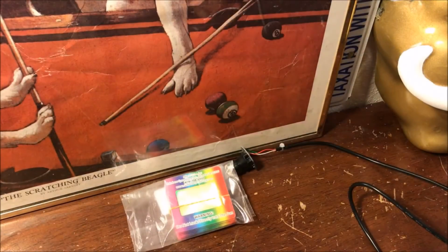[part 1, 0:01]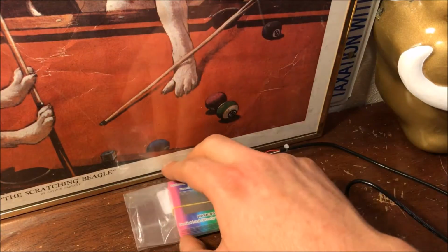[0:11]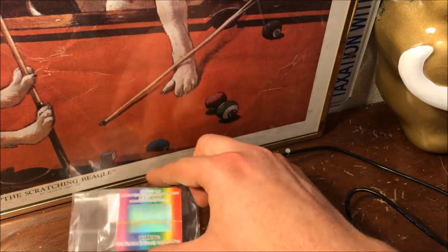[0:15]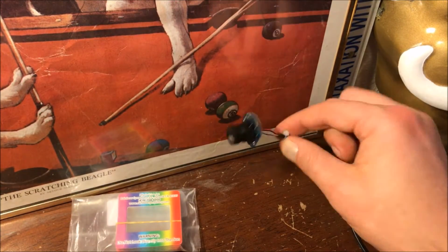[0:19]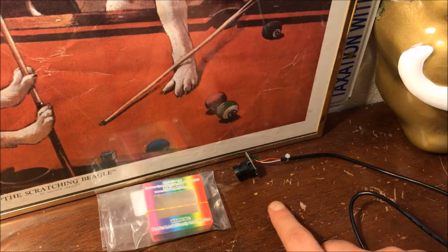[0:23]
Hey guys, today's going to be the second part of the DIY $20 spectrometer series. So in the first part, we discussed the main components of the spectrometer, the diffraction grating and the webcam camera. If you still haven't seen that, definitely go check it out, and it'll give you the information on how we got to this point.
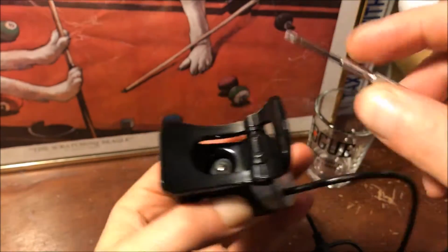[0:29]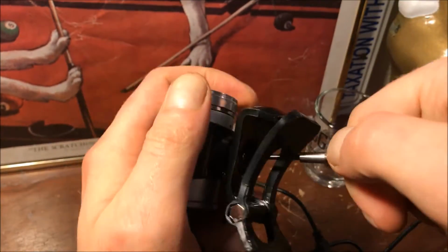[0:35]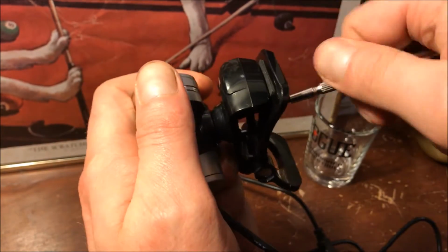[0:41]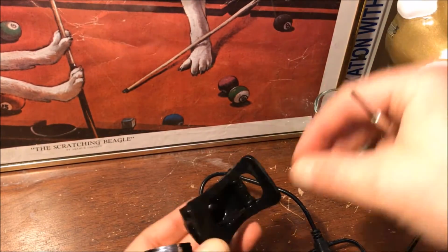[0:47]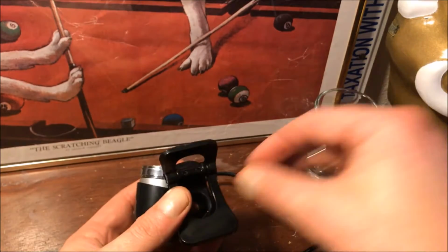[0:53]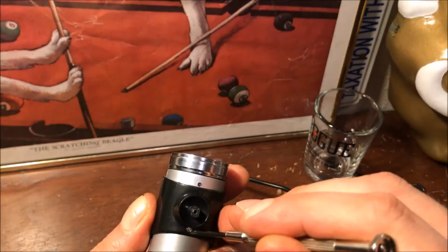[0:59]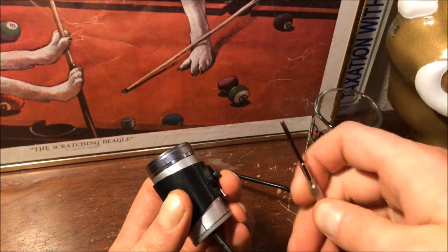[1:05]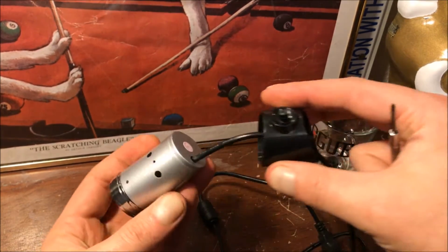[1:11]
Alright, so it looks like it has a screw attaching the clip on here, so I'm just going to try to take that out. It's probably going straight into plastic, I'm guessing. Oops. Okay, so there's a bit that kind of gives it that swivel effect. Okay, so we have another screw here holding this housing. So that just comes off.
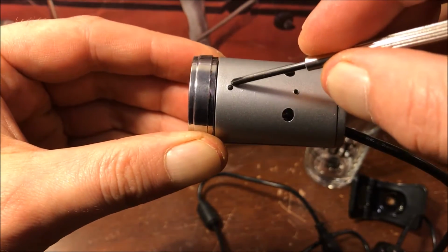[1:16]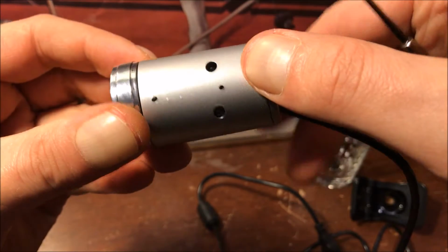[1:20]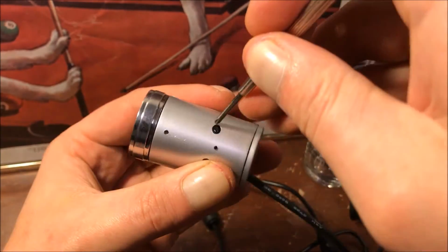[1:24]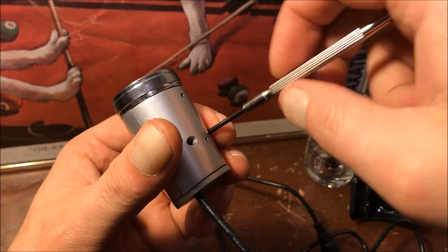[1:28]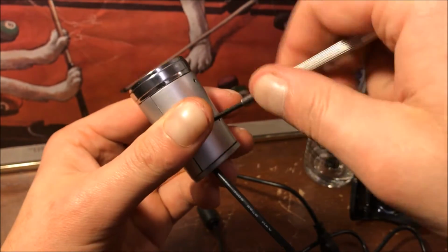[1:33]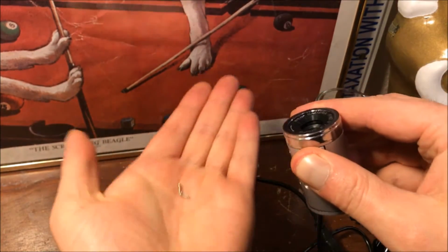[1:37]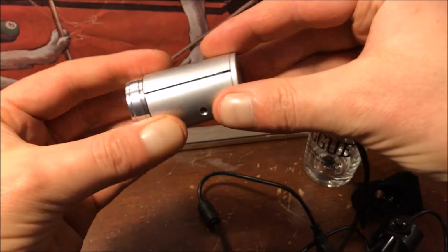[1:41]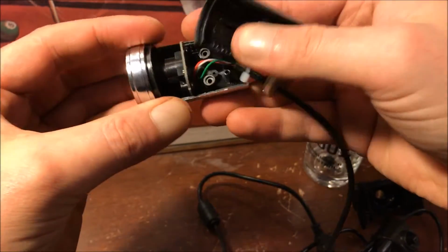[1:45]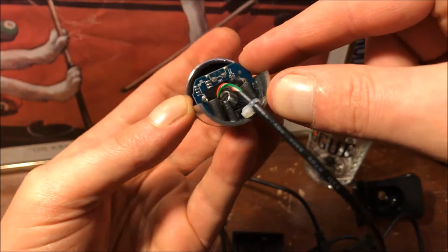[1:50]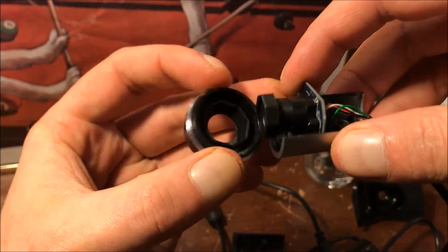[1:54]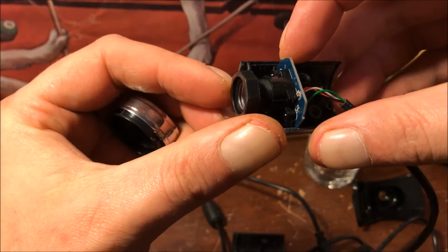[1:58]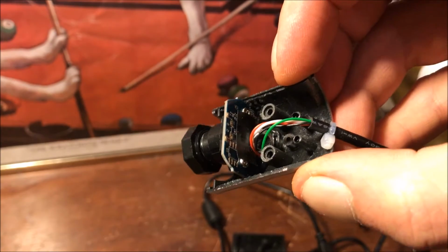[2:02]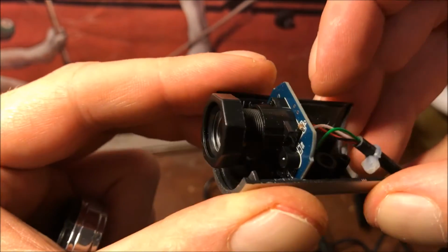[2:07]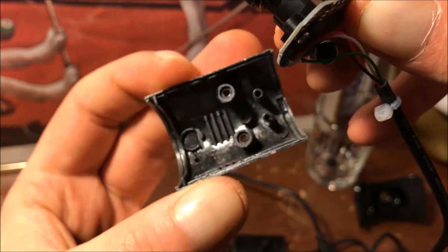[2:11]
Then that's probably the hole for the microphone. And then, okay, so there's screws in each of these holes as well. Just comes right apart. See what we got here. So there's the control board, and here's the lens. So I think it's just sitting in there. Oh, yep, comes right out.
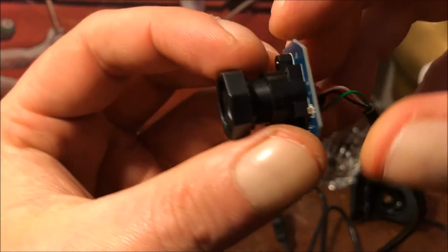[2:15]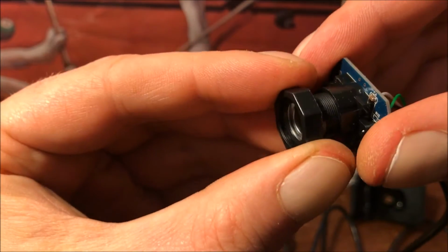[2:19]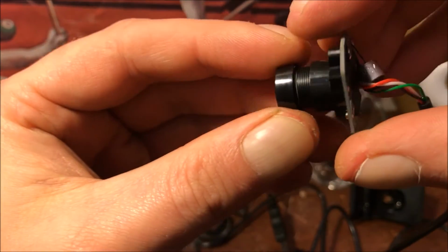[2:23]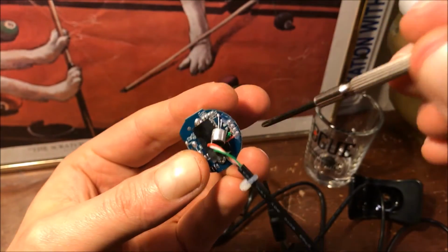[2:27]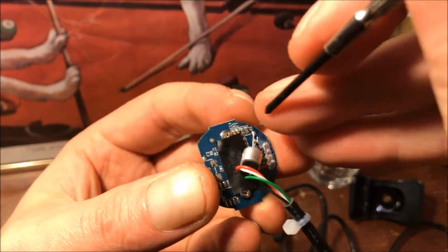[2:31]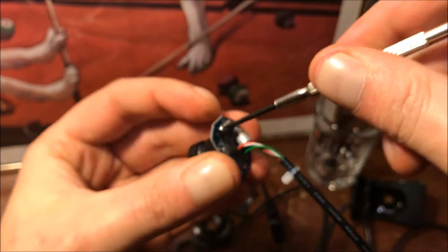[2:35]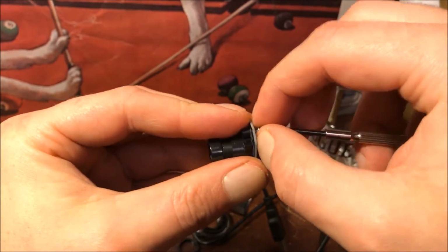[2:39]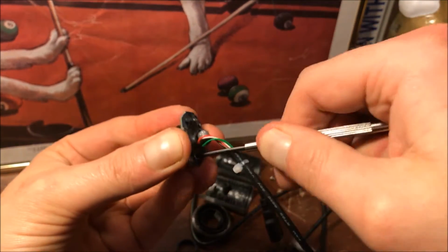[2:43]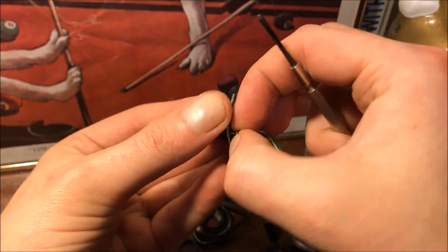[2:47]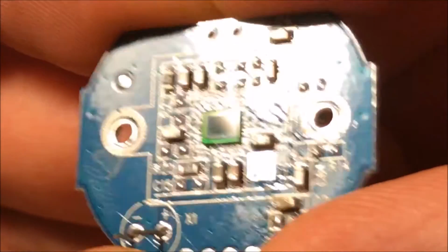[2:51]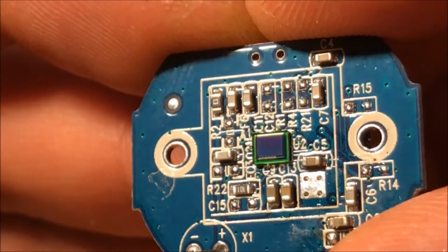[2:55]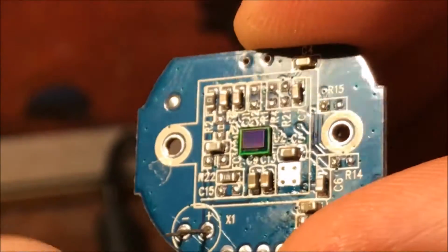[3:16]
Take this bit off. And now if we want to remove the lens, I think we need to unscrew it from this side. So that image sensor there has many small components that we call pixels, each of them independently responding to light. And this one's 640 by 480. Basically the way our spectrometer is going to work is that we're going to use the diffraction grating to split up white light, and it's just going to separate it onto the image sensor.
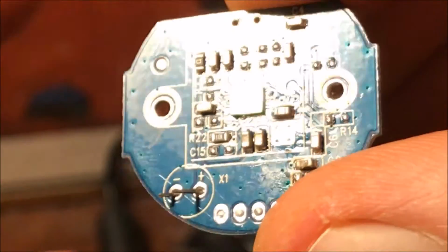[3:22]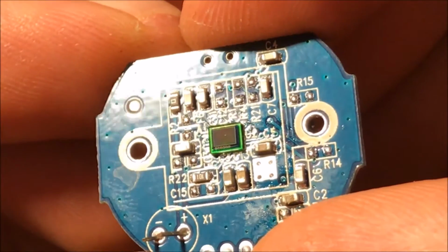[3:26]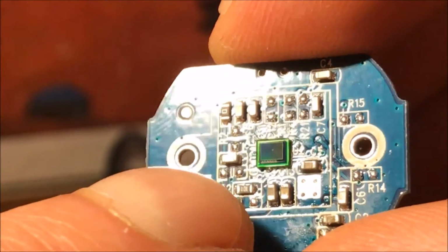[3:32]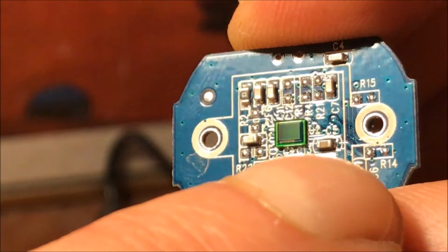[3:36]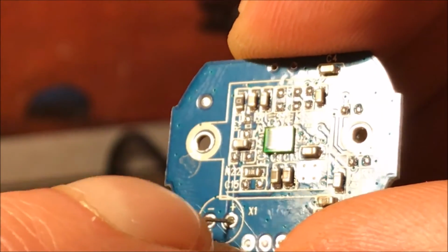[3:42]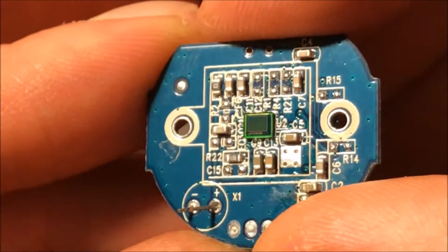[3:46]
So the image sensor does not need to know what wavelength it's getting. It could even be a black and white one. What matters is that on one side, on the left, let's say, it'll pick up blue and UV, and on the right side, it'll pick up red and IR, green somewhere in between. And so it'll just count the intensity at each of those pixels, and we can reconstruct a spectrum from that.
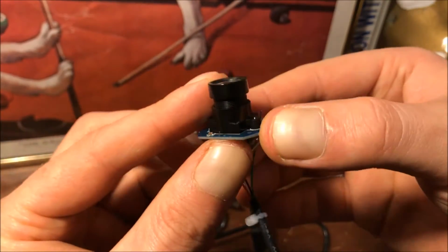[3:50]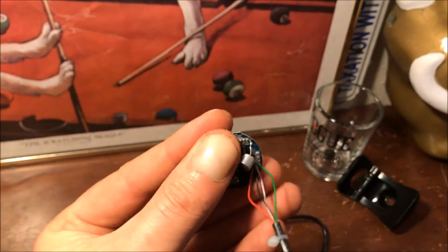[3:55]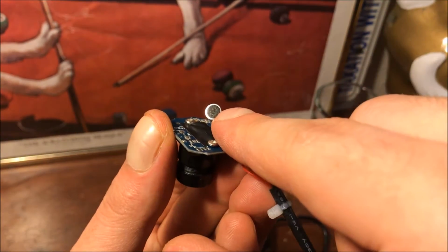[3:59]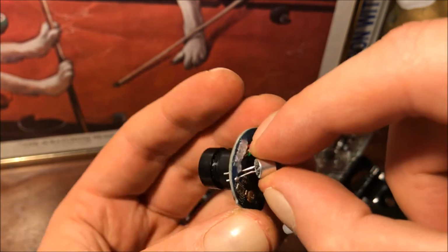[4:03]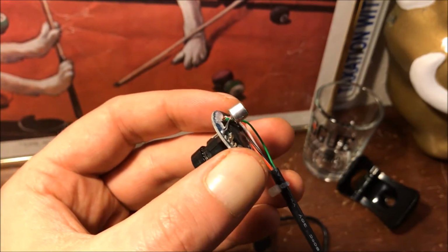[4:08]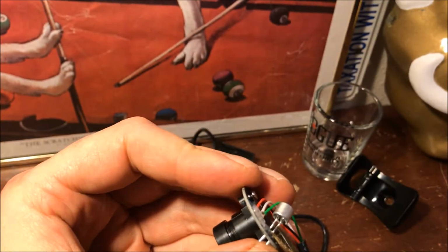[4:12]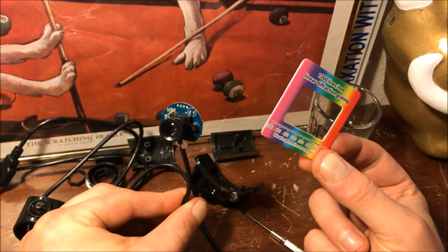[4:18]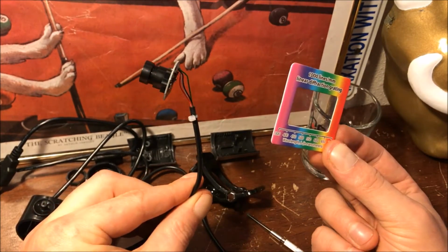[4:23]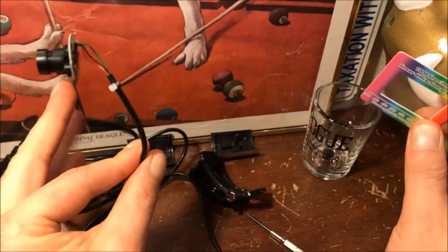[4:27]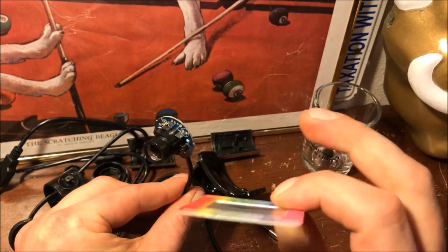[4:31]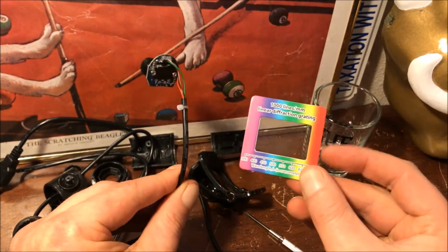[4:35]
I put back the lens, screwed it back onto the board. Now we have the microphone still left on here. You can leave it if you want to use this for some other applications, but for me it's going to be dedicated to the spectrometer. So I'm just going to clip that off. Alright, so basically with these two components, we have everything we need to make a spectrometer. The only thing remaining is some way to isolate all of the stray light that is present, so that we can just focus the light into the camera from just the source that we want to analyze.
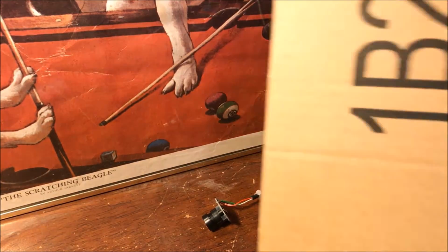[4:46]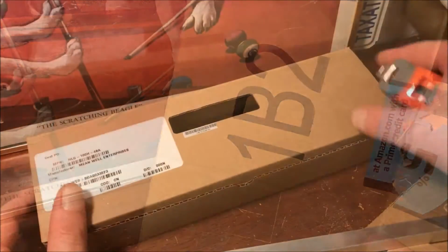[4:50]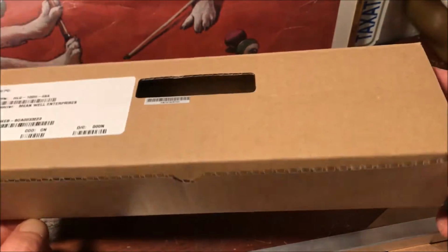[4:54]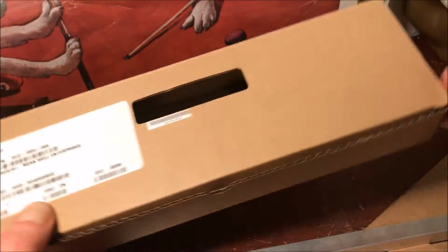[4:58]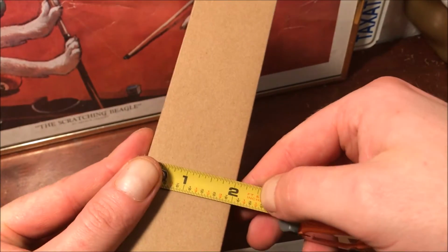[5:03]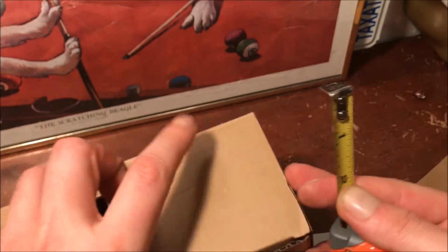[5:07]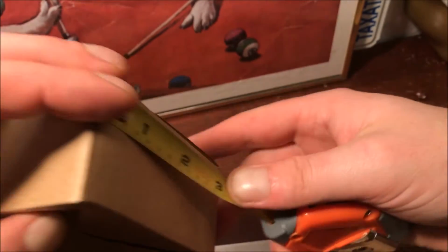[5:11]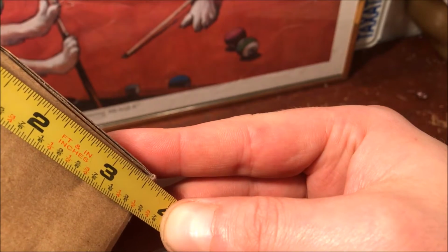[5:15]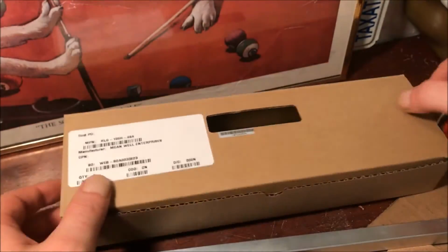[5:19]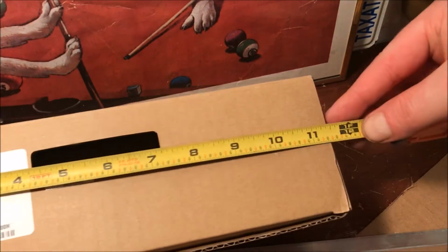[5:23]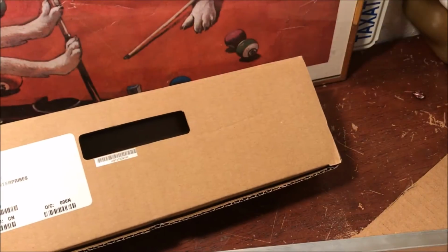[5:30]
You can make it out of a various number of materials, out of wood, out of a foam board, but I'm going to go ahead and use just some cardboard. I'm actually going to try to use this box that the Meanwell driver for the LED boards I'm running right now came in. It is just about 2 inches, so I'll have to trim the diffraction grating. So 2 inches high, 3.5 depth, and around 11 3/8 for length.
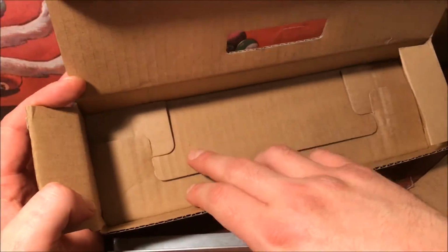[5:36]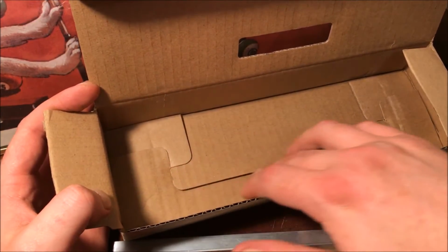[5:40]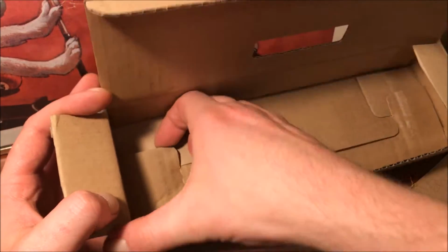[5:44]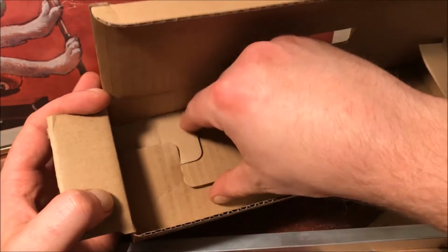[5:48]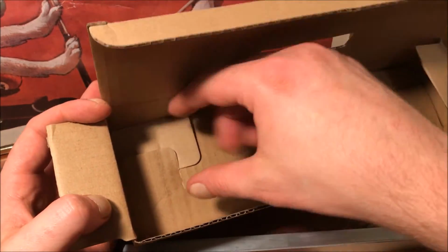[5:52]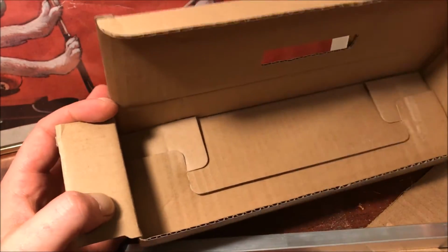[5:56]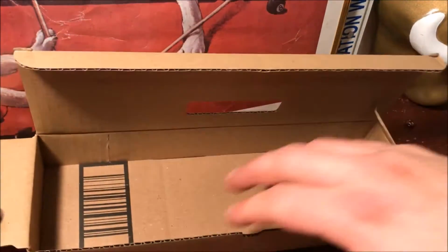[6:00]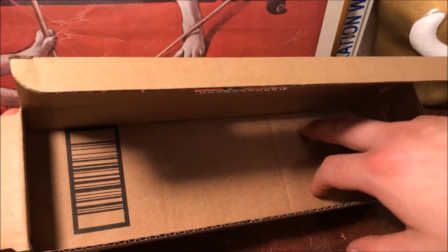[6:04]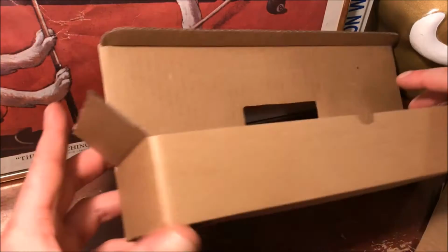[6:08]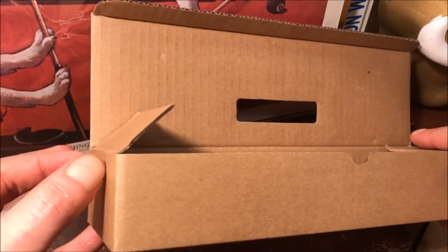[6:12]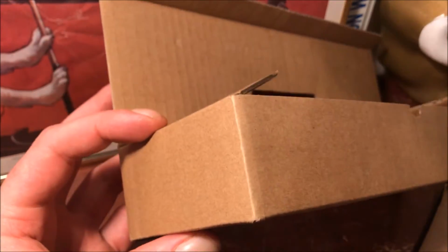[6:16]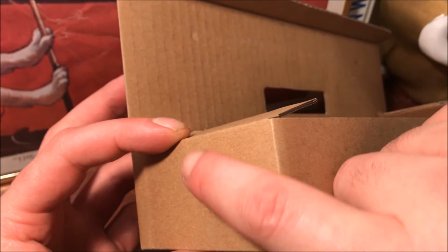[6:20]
So the first thing I think I'm going to do is reinforce the bottom here. You can see it's not an even surface, so I'm going to first of all glue these pieces onto each other permanently, so put some glue down here and along there, and then cut out a piece of cardboard that I'm going to glue in here as an added support for the bottom. Alright, so there's the reinforced bottom. Again, I just glued on a piece of cardboard cut out to size. So next, what I'm going to do is cut a large slit on one side. You can probably actually just cut the final slit in the cardboard if you're very careful.
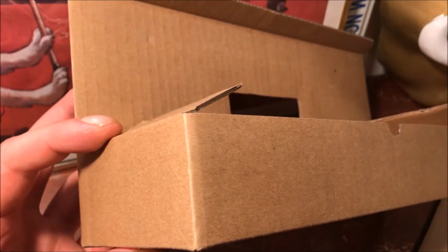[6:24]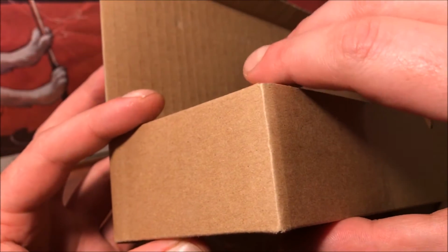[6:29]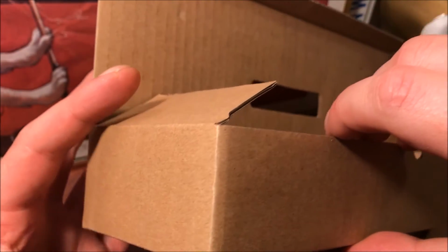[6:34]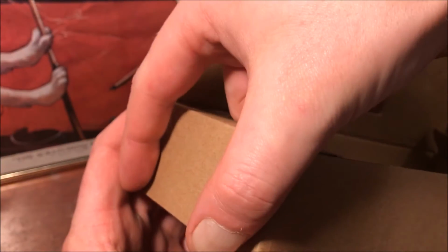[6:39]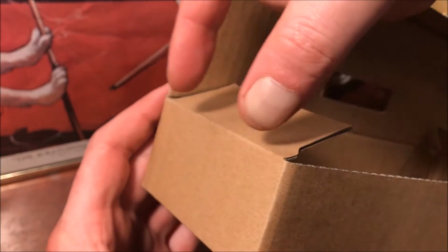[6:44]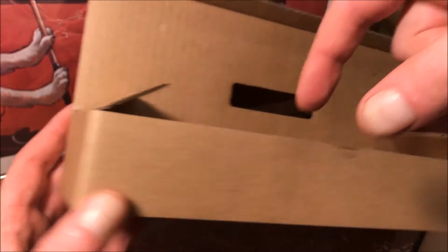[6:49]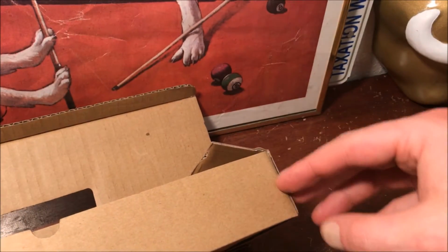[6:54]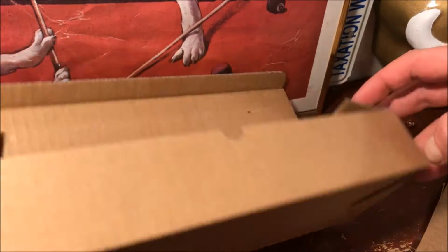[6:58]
But it's better to use something with a very straight edge, like a razor, to make the sides of the slit, and that way you can adjust it perhaps. So what I'm going to do is cut a pretty large one, and then I'm going to have kind of a mounting bracket that I'm going to make out of cardboard that's going to go on top of that, and then the actual slit is going to slide into that, hopefully. So I think I'm going to use this side for the slit because this side has the seam. But I think I'm going to reinforce the whole thing with maybe some Gorilla tape.
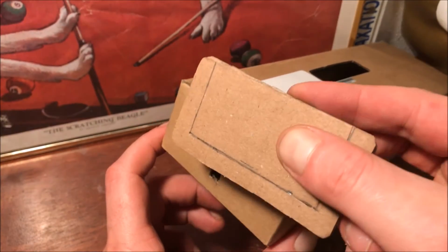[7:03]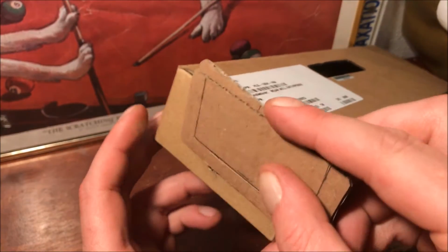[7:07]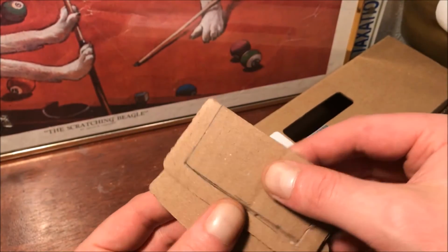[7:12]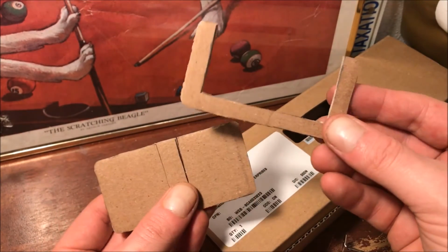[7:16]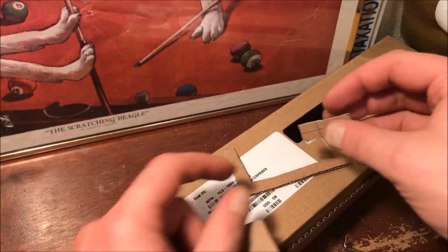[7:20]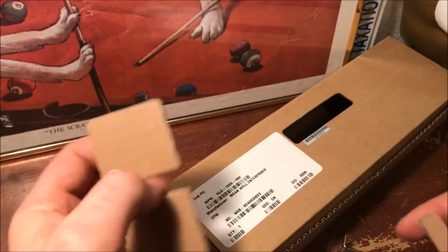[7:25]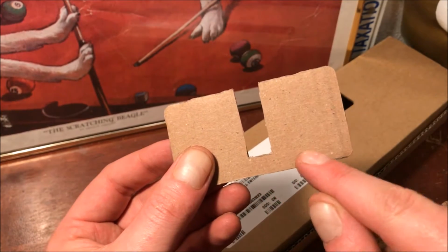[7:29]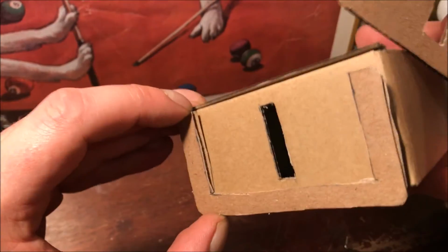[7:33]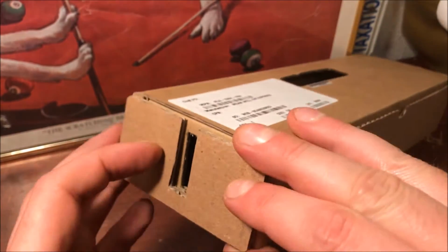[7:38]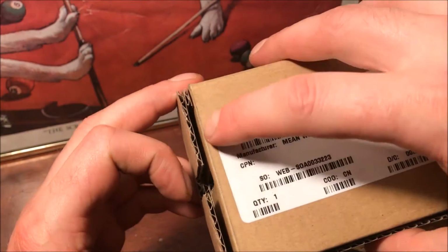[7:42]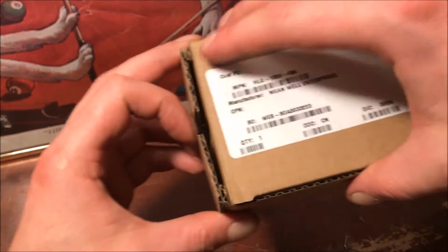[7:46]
To make the slit holder over here, what I did is cut out two pieces of cardboard that match the size of this face here. Then in one of them, I cut it out so that it was a thickness of 3/8 of an inch. And in another one, I cut out, let's see how much is it, about 1/2 inch slit, leaving 3/8 of an inch at the bottom. So the way this is going to work is that I'm going to glue them like that, and then like that. So that space will be where the slit resides.
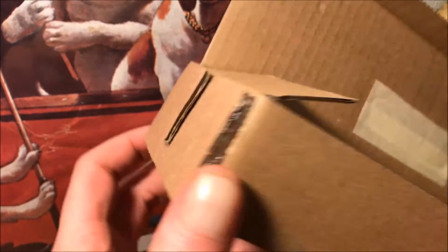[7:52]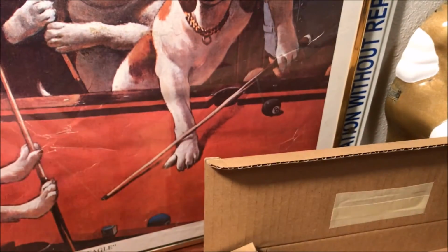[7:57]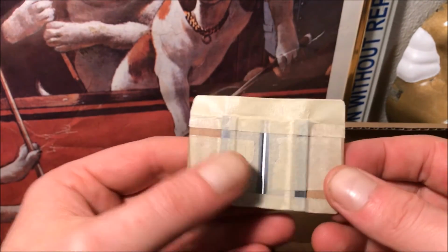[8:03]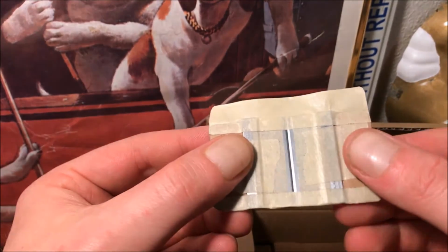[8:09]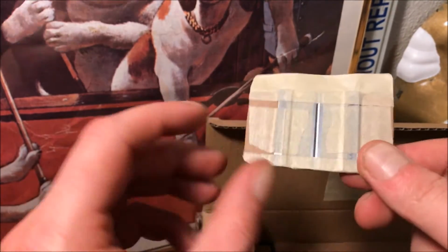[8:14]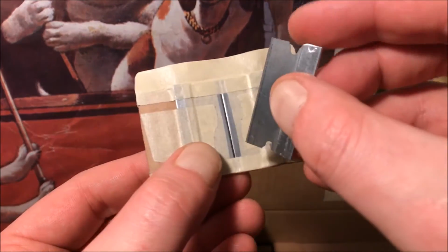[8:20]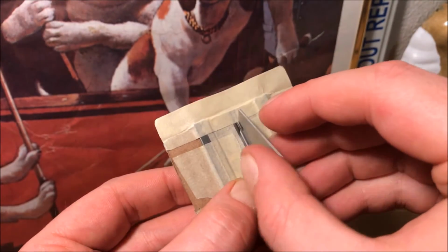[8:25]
Alright, so there are those two layers glued in, the insert and the outer piece. See that little pocket there? So I went ahead and made a slit as well. So we got this piece of cardboard on the back. There's a hole cut out. And on the front, there's two razor blades taped on. Basically, I taped them flush to the bottom here. And then I used another razor blade to set the separation there. So it's just barely a razor blade's width across.
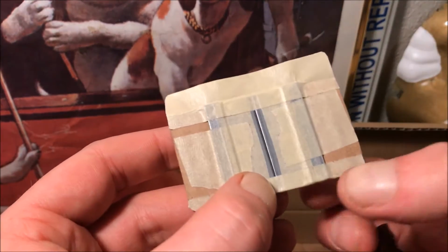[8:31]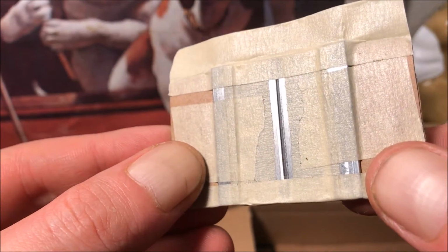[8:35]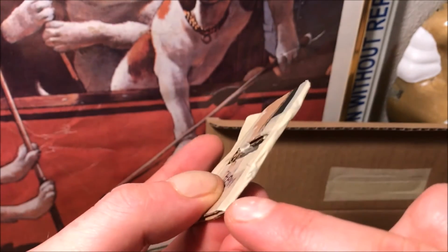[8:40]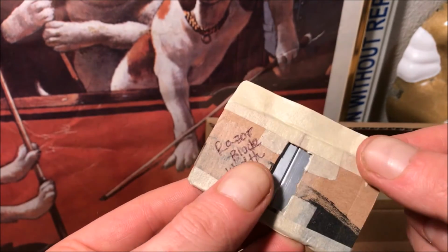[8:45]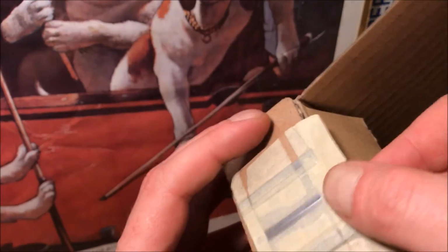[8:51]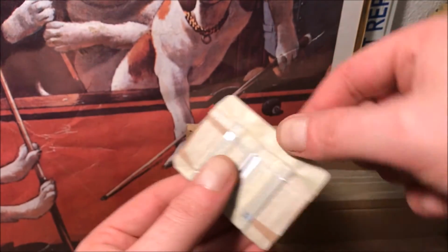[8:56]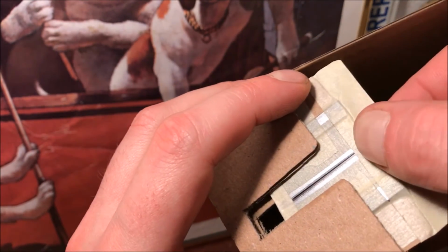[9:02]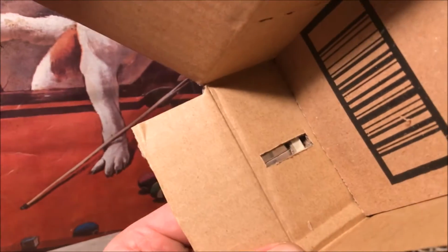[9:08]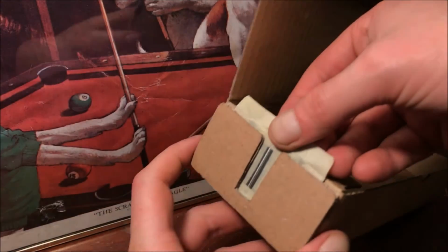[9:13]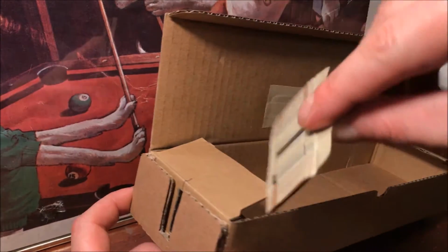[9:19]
And then I went ahead and put another strip of tape down here to just reinforce the bottom of the corner here. And I made it kind of short. Otherwise it would be too difficult to take out of there. And so I added this extra strip at the top to be like a handle. And so the way it goes is it slides in here. And then you can adjust it relative to the opening there. And then if I need to swap it out with a different one, just pull it out and exchange it with some other slit width.
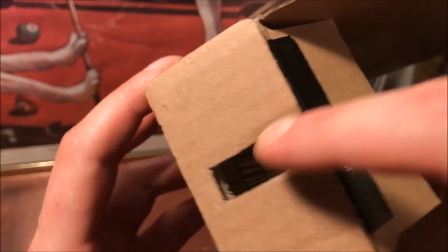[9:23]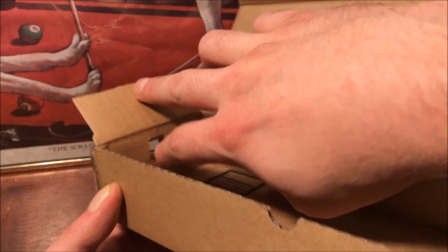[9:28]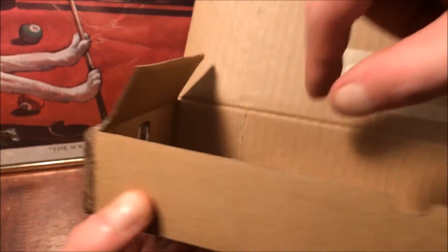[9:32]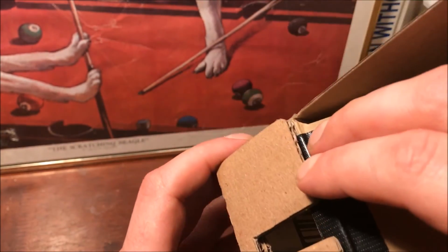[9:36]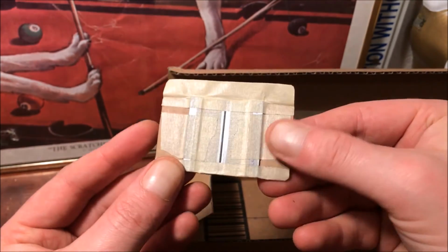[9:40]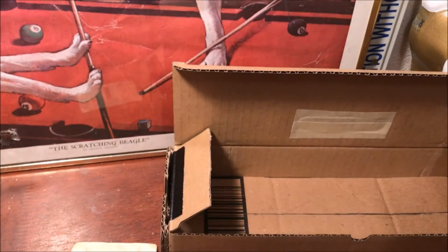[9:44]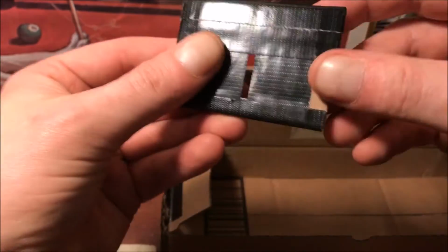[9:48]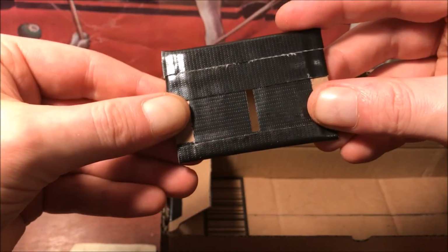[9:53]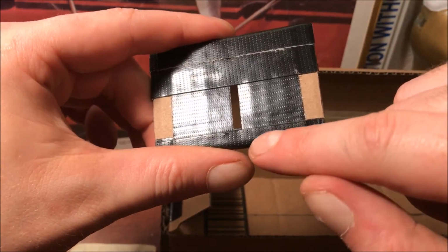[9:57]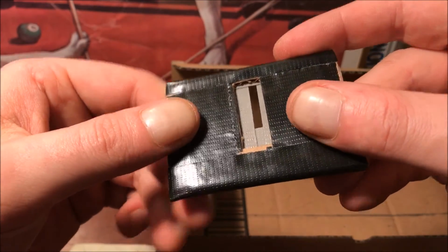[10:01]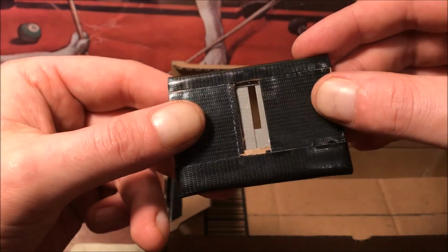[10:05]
I went ahead and widened the window here on the inside, so they're pretty much the same dimension for the holder and actual case. And I just reinforced it a little bit here with some Gorilla tape, along with the very narrow slit I made here with the razor blades. I made another one just out of tape. See that here? It's about 3 millimeters. And the only thing that really matters is that it's defined from this side. You can see how from this back side it's all recessed.
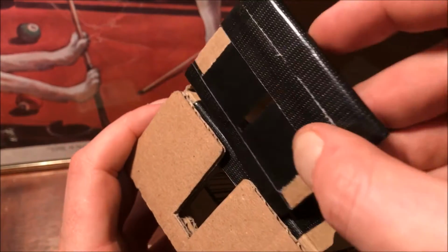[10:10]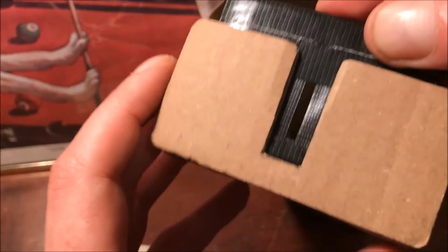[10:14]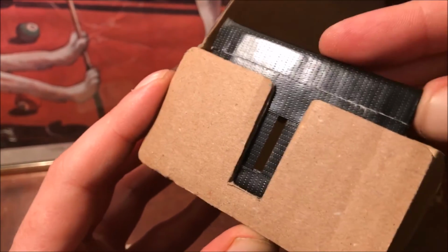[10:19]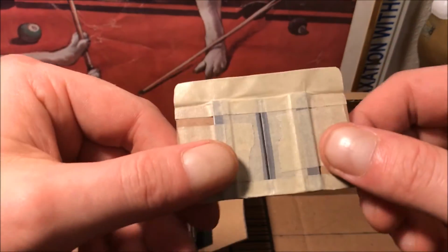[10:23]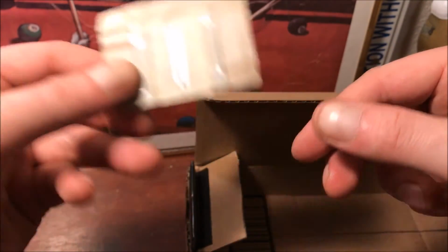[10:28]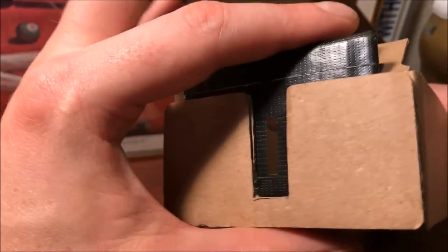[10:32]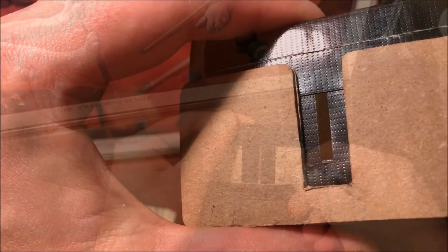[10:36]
So a wider slit like this would be useful for a low light level, low intensity source. Whereas one of these could be useful for high intensity directional light. So just different slits for different applications. But this one should be just fine like that.
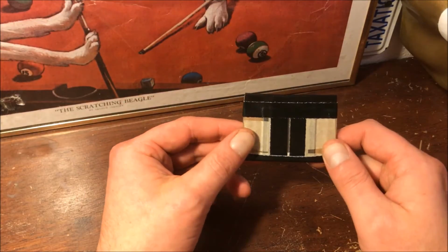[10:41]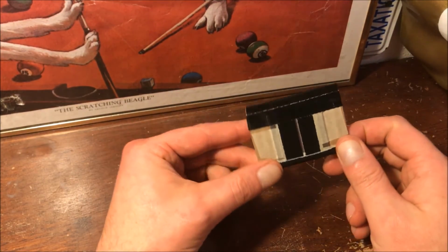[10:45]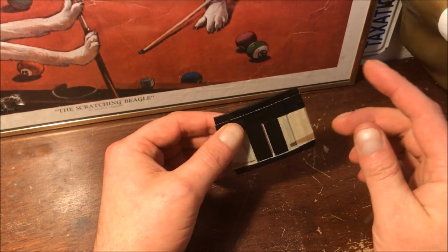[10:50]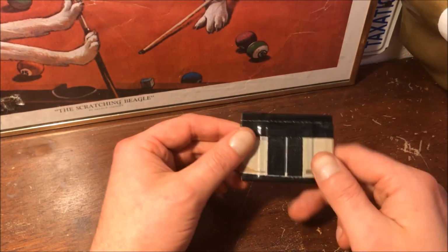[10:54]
Alright guys, that's going to do it for today. In the next part, we're going to go ahead and finish up the enclosure, get it nice and light tight, get the camera and the diffraction grating mounted inside of there, and hopefully finally get to take some spectroscopic measurements.
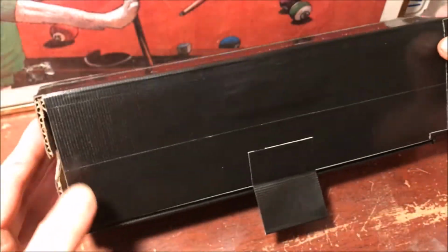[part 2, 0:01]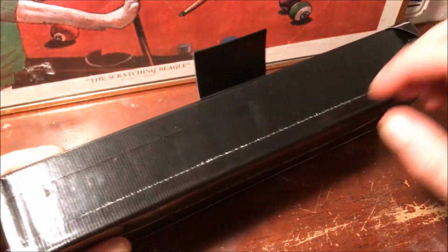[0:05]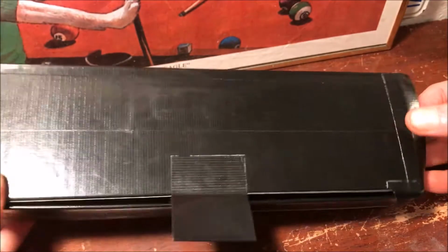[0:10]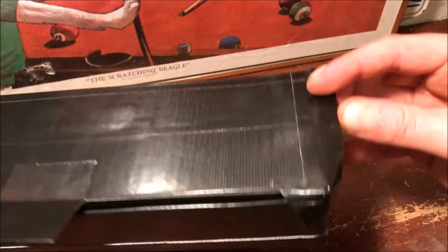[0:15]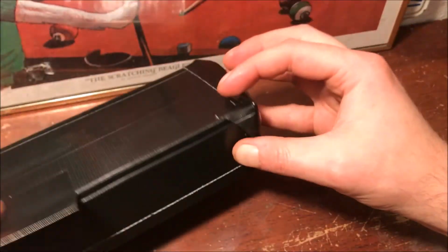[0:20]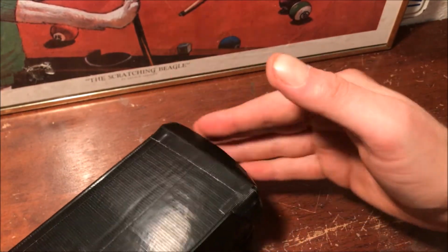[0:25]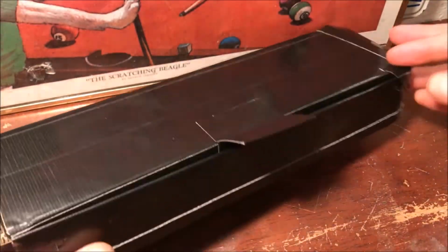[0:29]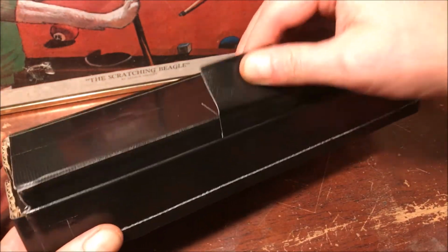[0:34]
Alright, so I went ahead and covered the entire outside with Gorilla Tape to give it some extra strength, durability, and to try to block out any light leaks. You can see I added a little extra skirt here on this side of the lid, so that blocks that edge. And then I'm gonna probably have to do the same thing all along here. Add a little tab here as a handle.
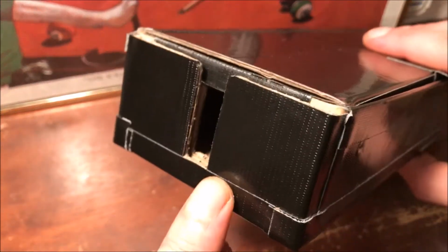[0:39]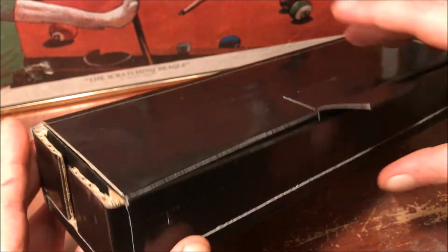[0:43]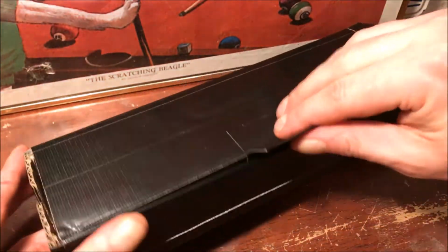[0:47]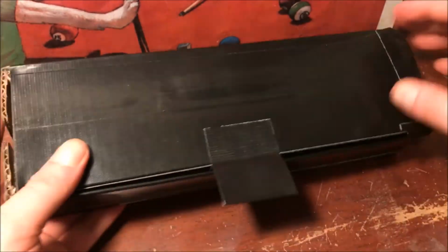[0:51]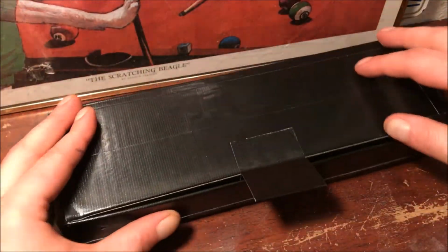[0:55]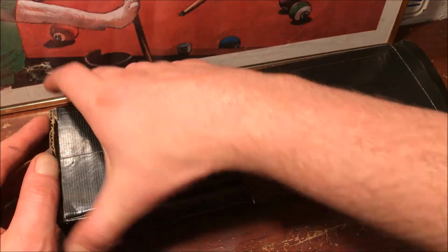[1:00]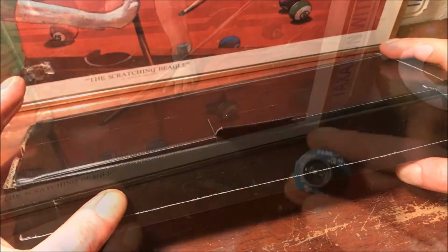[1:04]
And yeah, just looking through it down here myself, it already looks really dark. The only light that comes in is obviously through here, and it's very directional because there's that lip. And so one kind of easy solution that you can do without having to go through all this trouble is you can get a black cloth, and whenever you're doing your measurements, you just drape that over the body to block out any stray light.
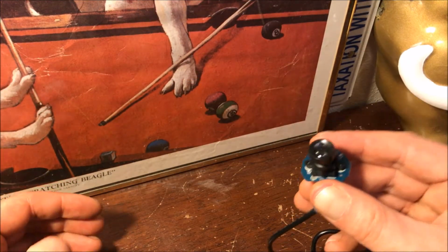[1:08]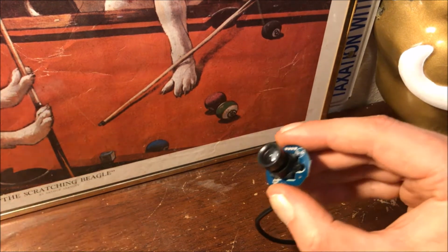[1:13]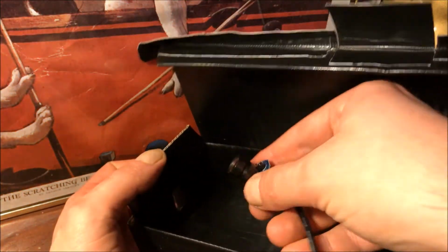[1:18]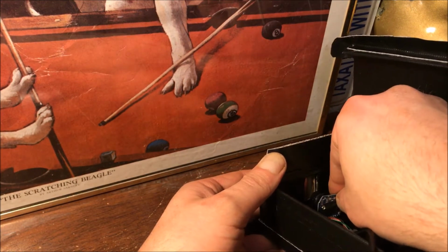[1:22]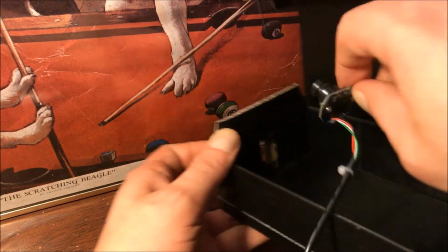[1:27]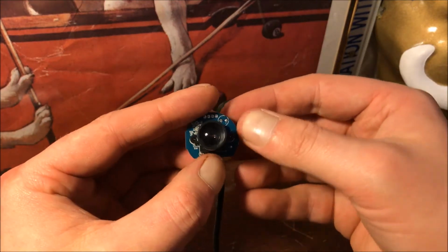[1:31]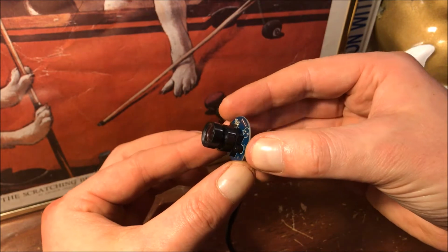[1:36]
Okay, so now to mount the diffraction grating and the camera inside of our enclosure. You can definitely mount it like this. I think for me, if we take a look here, it's going to be a bit low. Let's see. Yeah, it would work, but it would be better if it was raised up about half a centimeter to a centimeter. And we can easily do that by making a little stand out of pieces of cardboard or something else.
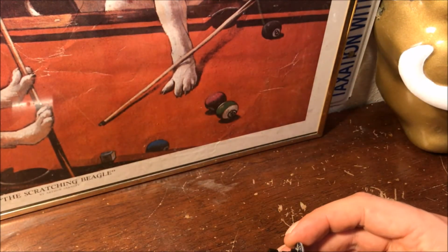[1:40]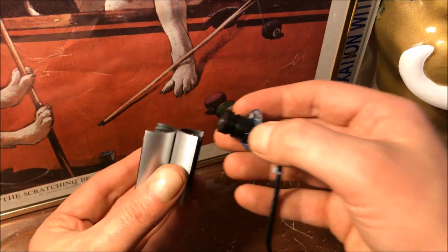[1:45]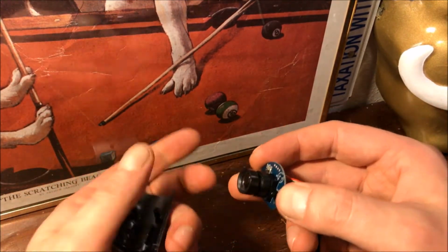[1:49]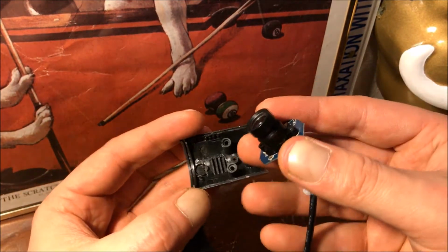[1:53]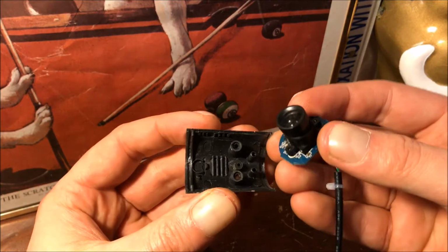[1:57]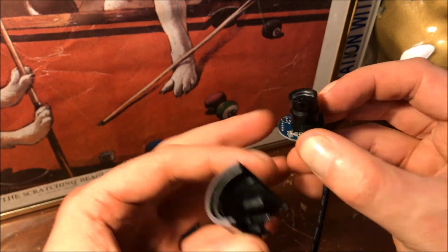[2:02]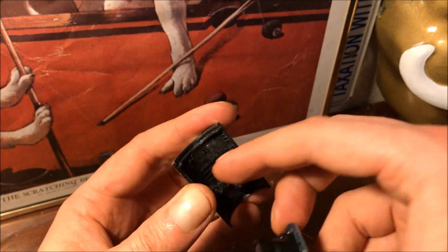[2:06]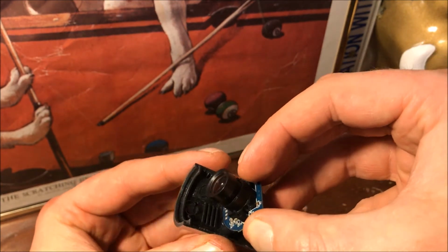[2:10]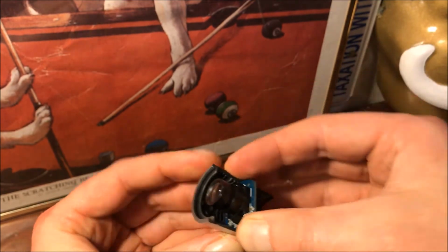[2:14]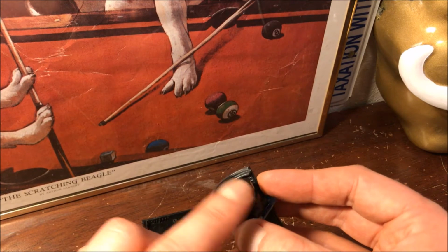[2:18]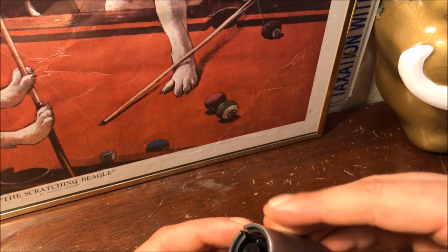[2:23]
But just for the prototype to kind of test things out, I'm going to go ahead and use the original casing it came in to help me out. And what I'm going to do is go ahead and just put it in just using these two cylindrical pieces. And having the round side of the board here, you get the case that has the ridges in there. And normally it sits in here, but I'm going to move it all the way close to center as I possibly can, so that the lip here is now above the camera. And then the top. Now we just need to put back the screws.
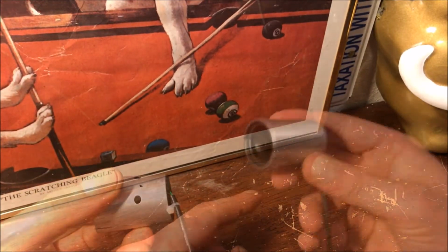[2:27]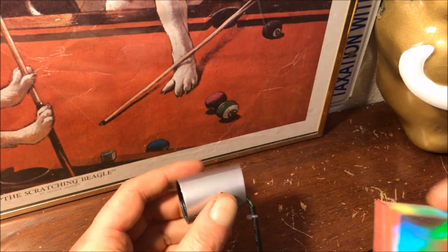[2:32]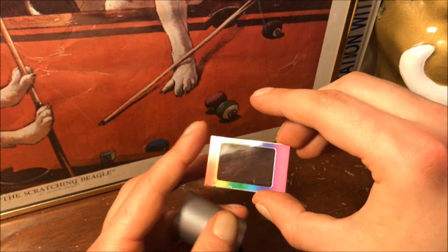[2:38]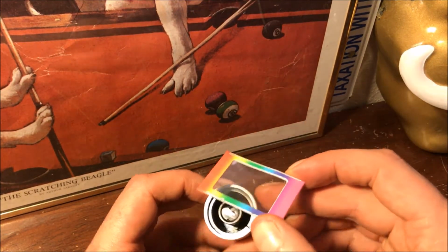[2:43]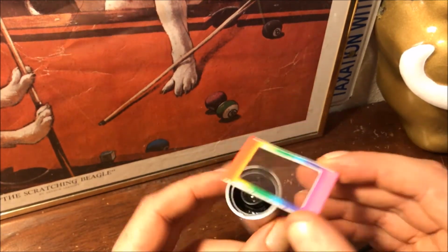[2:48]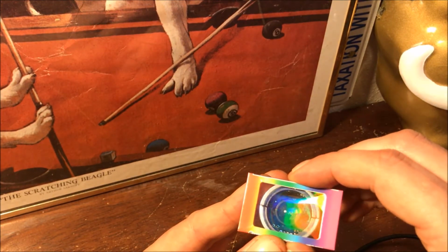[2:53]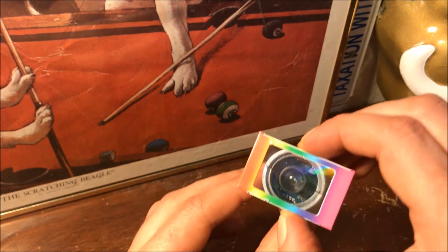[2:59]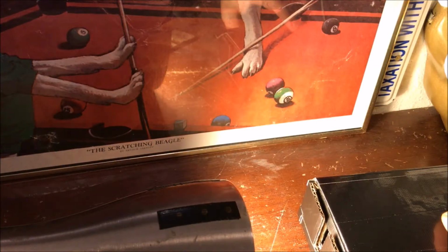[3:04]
Okay, so there's the camera inside its housing. I went ahead and trimmed the diffraction grating. First of all, the 2x2 size it originally came in would have been a bit too large for my cardboard box. And this way, since there's a flat edge here, for the initial stages at least, I can line them up, just tape on the diffraction grating, and that way I'll have something to rest on. Alright, so let's give it a shot.
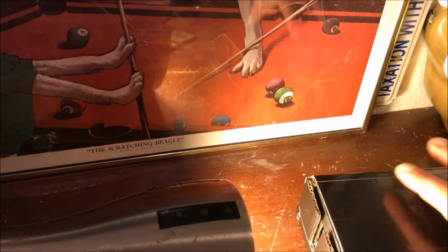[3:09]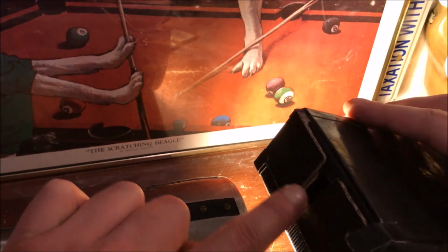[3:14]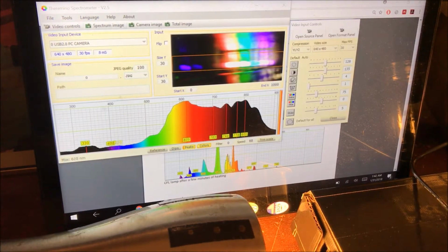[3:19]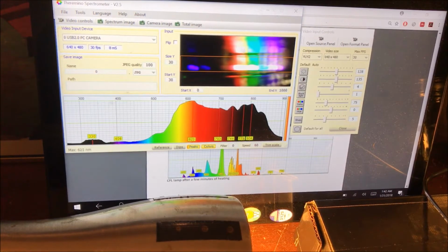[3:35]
I got the compact fluorescent light bulb in the fixture here. Let's try it without any slits, so basically a centimeter wide slit. I'm going to open up the Theremino software. There it is. Here you can select which camera you want to use. So I'm using just the USB plug-in one. Here you can see the actual image that the camera inside the spectrometer is recording. So clearly we're getting diffraction. And because of that wide slit, we're getting these large, chunky bands here.
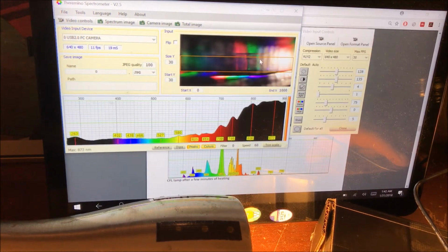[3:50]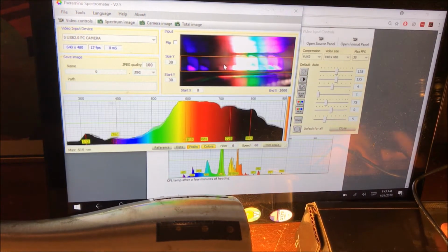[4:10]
And we can move the spectroscope around, kind of to get different reflections. I don't know if you can see that, but these white bands here are reflections off of the inside of the box. So there's probably some light leaks, or we could have gone for a better surface on the inside, gone for a matte black. I didn't do that. I just used some regular black paint.
But also we can change some of the video components here. So we have brightness, contrast, backlight, saturation, hue, sharpening of some sort. So we could reduce that down to get rid of that back reflection. We can play around with all sorts of parameters. And basically what we're looking for is a CFL pattern like you see down here on the Theremino site. So there's some characteristic peaks that all fluorescent bulbs have. And we are trying to find those, but you can see right now it's just very broad.
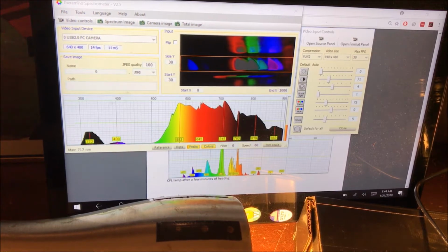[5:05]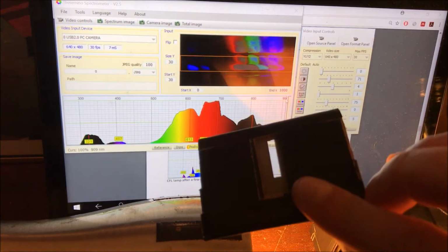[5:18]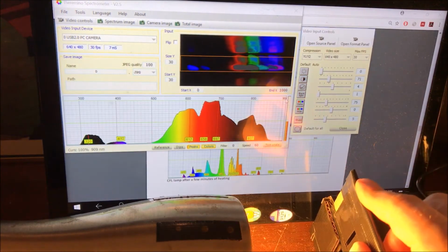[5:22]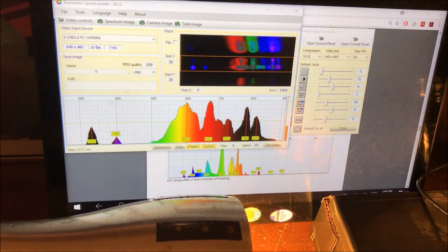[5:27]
And no matter what we do really here, or how we position the spectrometer, it's not going to change that. What we need to do is change slits. So let's go for the narrow one that's about, I don't know, 3 to 4 millimeters. I'm going to put that in. Okay, and you can probably see an almost immediate change there.
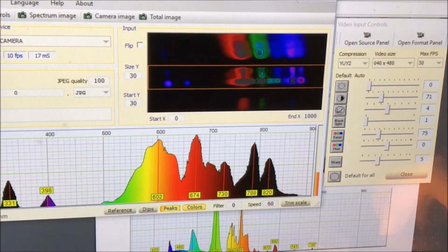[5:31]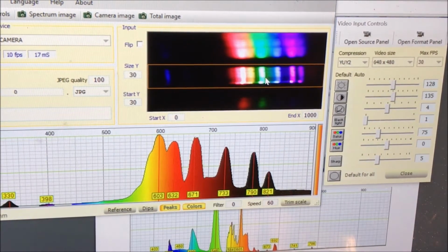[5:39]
There, we now got some much better defined slits. Let me just reset that. Okay, yeah, that looks a lot better already. But you guys can probably tell that there's something wrong with this picture here. The red is on the left, the blue is on the right. Well, that's not how it should be.
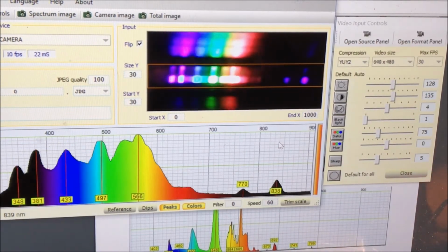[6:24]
So we got this flip box here that we can click. Now it's correct where the blue is corresponding to these low wavelength intensities, and the red is corresponding to these higher wavelength intensities. And suddenly you can see we've got somewhat more well-defined peak structure here. It's still nowhere near as sharp as this comparison that I'm looking at here at the bottom, but it's kind of getting there.
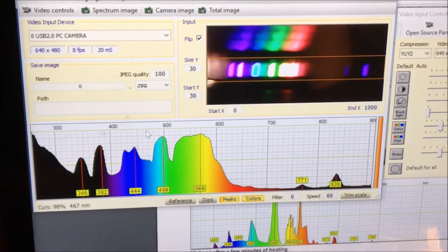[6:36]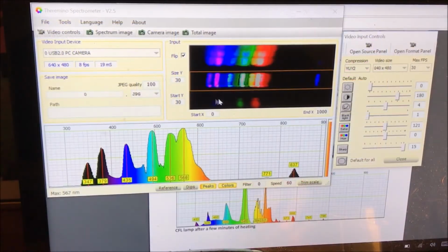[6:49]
Again, these white reflections, they're going to count towards the light just the same as the other ones. And you can see this huge hump here at the end. That's not UV from the lamp, that's just an artifact and an erroneous component. Okay, so we're already getting there.
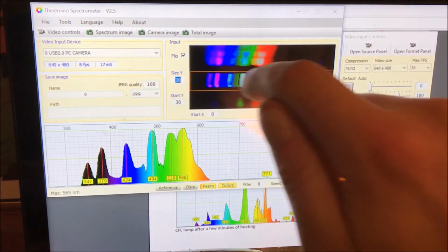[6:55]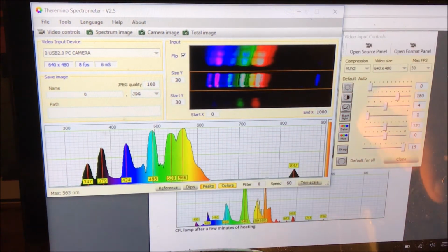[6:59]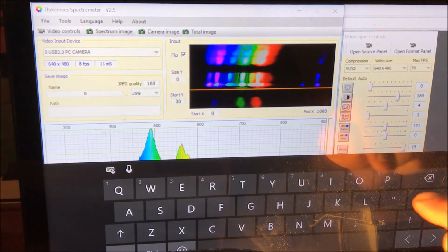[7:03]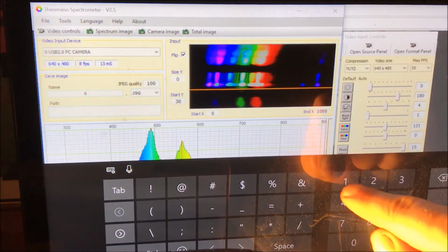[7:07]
Let's also reduce the size of our box here. Let's see. Keyboard's not coming up automatically for some reason. So I'm going to go to 15. Oops.
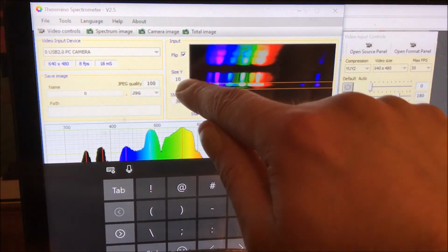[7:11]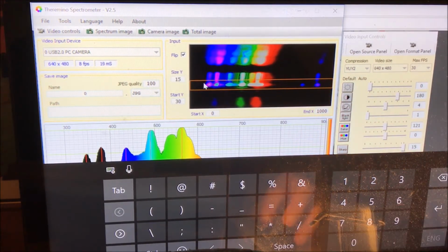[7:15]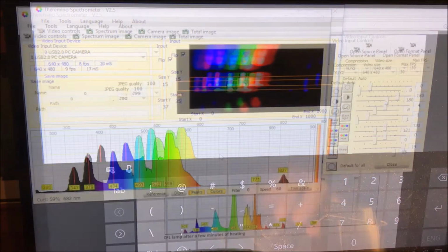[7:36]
And if I go really small, like 5, you can see we've got this really narrow band, so I can really select what part I want to measure. But I don't want to go that narrow. Let's try 15, but now we need to obviously move it up, so let's increase this value. All right, so that's not great, but hey, it's a quantitative result, and we can take a look here and try to match this pattern, since we got some peaks here, to the known compact fluorescent pattern.
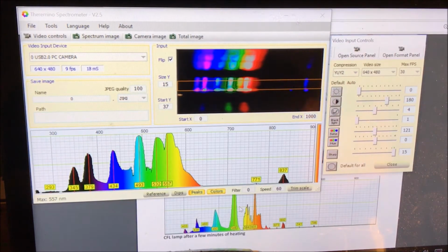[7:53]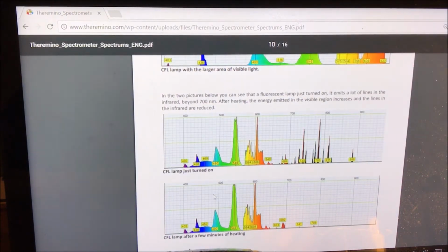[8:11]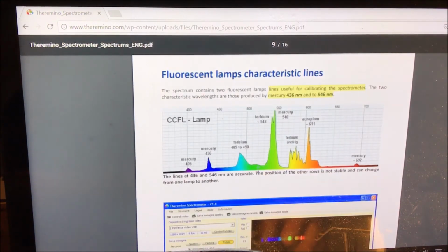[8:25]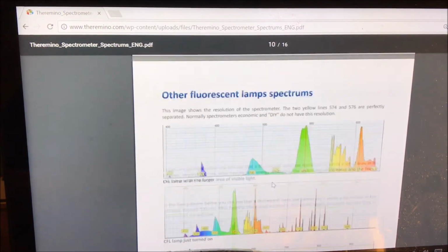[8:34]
And this is in fact how you calibrate this instrument. You use the known emission peaks from a fluorescent bulb, and since those emission peaks are based on the emission of chemical elements, they're never going to change. The different CFL spectra can be different. You can see they've got a couple different ones, where this one has this 490 peak, and it kind of changes with different IR emissions. And they have them identified here, and you can also look on Wikipedia for a compact fluorescent bulb to see what these different peaks belong to.
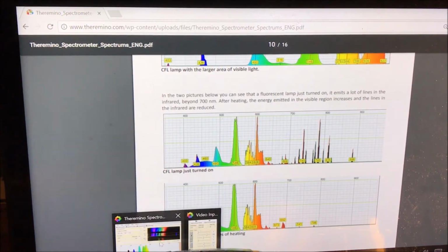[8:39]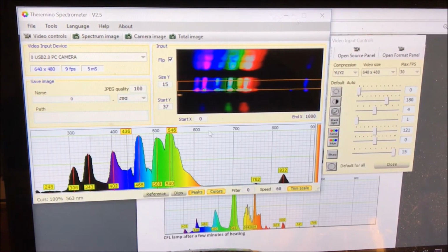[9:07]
Okay, so we have a button here that's trim scale. If we hit that, the two characteristic peaks have conveniently been highlighted here for us. And it's going to be the 546 peak here in the green and the 436 peak down here in the blue. So what we do is, if we grab the scale and drag it over, we can adjust the position of these
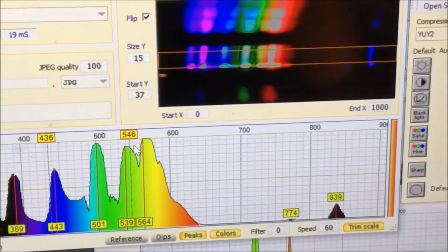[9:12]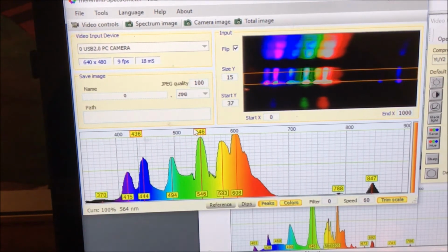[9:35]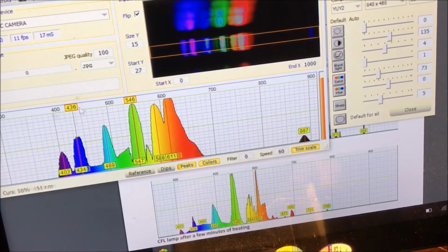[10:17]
If we look down here, the 436 here, and then we have this teal peak in between that and the 546. So I think this is the teal peak that should be at 490. And this one just needs to be adjusted from this direction. And you can kind of go back and forth and try to get that as close as you possibly can. As close as I think I'm going to get it. And still, I mean, it's pretty much spot on. The peaks are very broad, but the basic shape, the key peaks are definitely there.
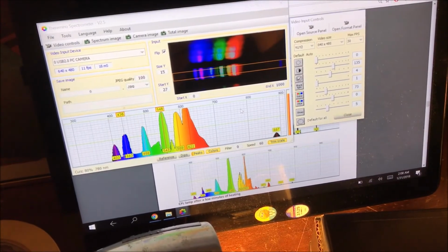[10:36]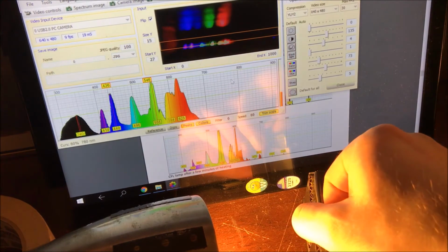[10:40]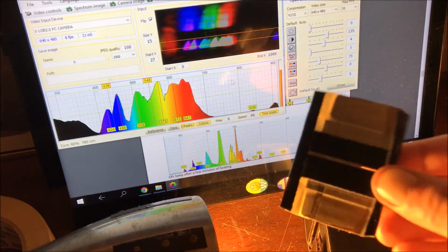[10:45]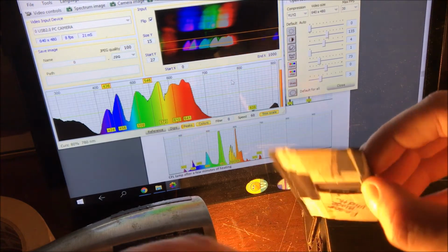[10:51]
We're not going to get any better resolution by changing any of the video parameters. What we need to do now is decrease the slit size even further. So I'm going to take out this big one and put in the narrow one made out of razor blades.
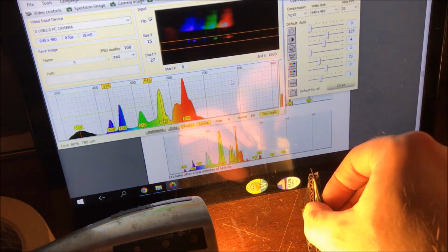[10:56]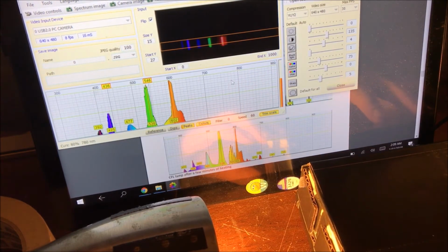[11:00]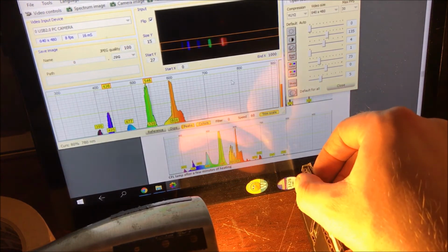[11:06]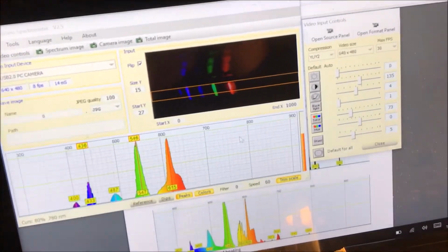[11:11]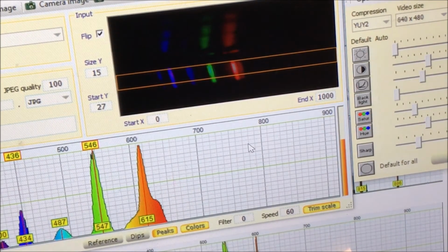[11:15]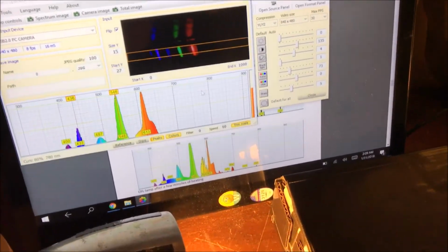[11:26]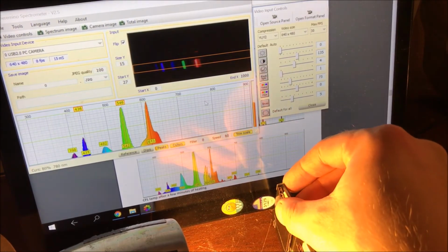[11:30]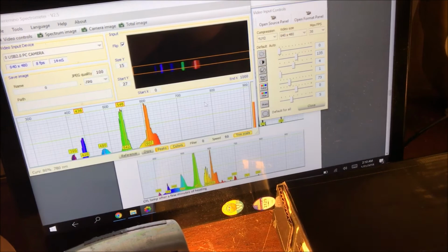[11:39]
So let's go ahead and put that in, and now we can face it directly. You can see you get very nice sharp lines. And if your lines look crooked like this, what that means is that the orientation of your slit is off relative to the camera and to the diffraction grating. So you can see here, if I change the angle of this, I can fix that, or go in the opposite direction. So there you go, nice and straight up and down.
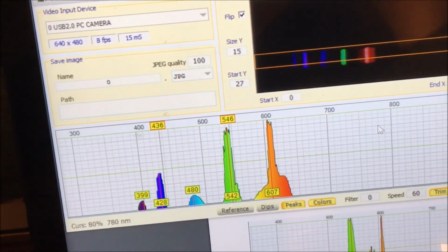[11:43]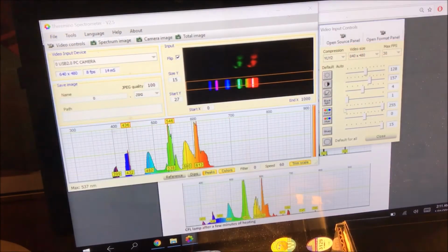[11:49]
And look how much more resolution we're getting already. This peak is starting to split up into different ones. Okay, there you go. Oh man, look at that. That is really close. If you've ever worked with even laboratory-grade spectroscopes, you know how finicky they are, how everything has to be absolutely perfect. And the more complex you get with the optics, with mirrors and focusing lenses, everything just has to be perfect. In fact, most of those setups are put onto shake tables, so basically tables that are isolated from the vibration of the ground. They're so sensitive that geologic movement can make a big difference.
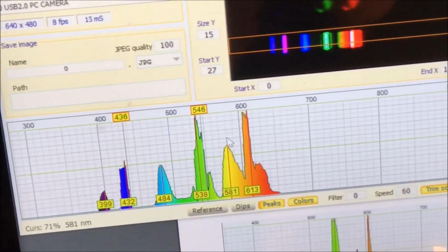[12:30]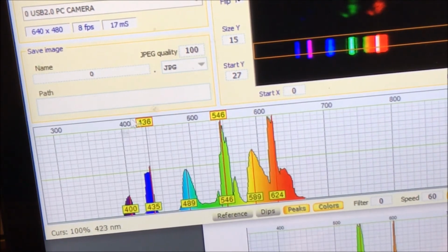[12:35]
Okay, so let's try to calibrate this in. We can move our 546 over to the left, and this one just a bit over. The controls here are a bit strange. If you grab the axis or if you grab the yellow box, they do different things as far as stretching the whole thing or just moving it left to right. You can see the automatically generated maximum point value adjusting. So there we have it, 436 to 436, 546 to 546. Perfect. So now this is calibrated.
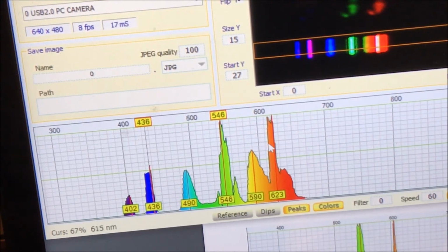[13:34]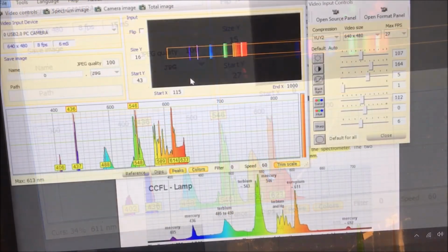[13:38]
And from this point on, we can go on and measure anything else, being confident that the values that we get and the spectrum that we get corresponds to reality. Without this calibration, that is not really possible. You'll still get the characteristic peak positions, but you won't really know where in the visible spectrum they actually lie. This 546 could be 600 something if you don't calibrate it.
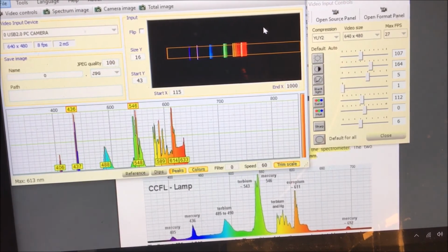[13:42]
All right, so here's what I got after some fine tuning, and look at how well resolved these lines are. So sharp, so nice. I am truly impressed by what we've been able to do here. Again, huge shout out to Theremino for making this possible. I am all about open source technology, especially when it comes to science. And look at those lines. I mean, can't get better than that. And guess what? The only thing that I changed was the focus on the camera. Me messing around with it in the beginning when I was unboxing it got it off focus. So I took it out and just looking at the image that the camera produced, I focused it in on an object pretty close to it, and boom, it's now working perfectly.
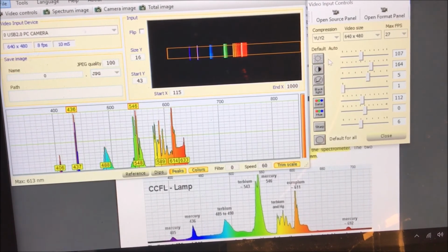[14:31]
You can see even with high brightness and contrast, we barely get any stray light artifacts at all. We got our calibration points exactly on. We got the mercury at 546 and the mercury at 436. And then our terbium at 489 and the reference is 485 to 490, so spot on there. And then the europium peak, we're at 614 and the reference from Theremino here is 611. I've even been able to resolve these yellow mercury and terbium peaks. So doing really well, really happy with how this turned out.
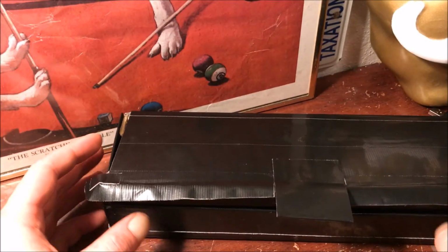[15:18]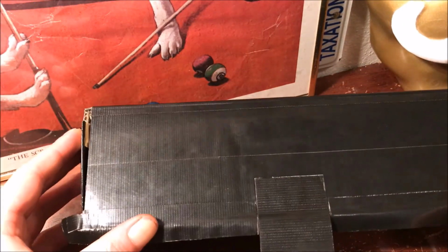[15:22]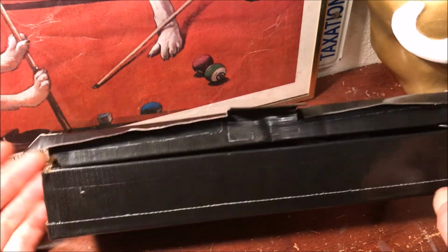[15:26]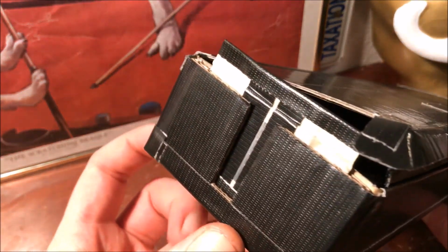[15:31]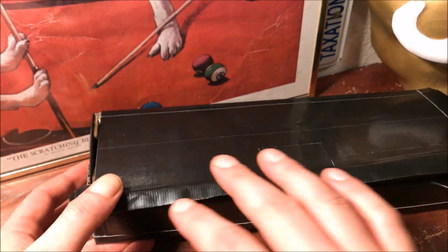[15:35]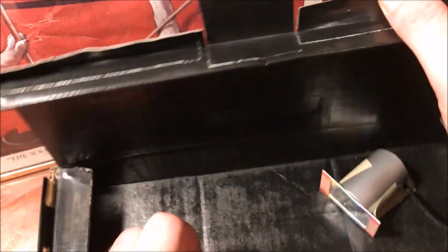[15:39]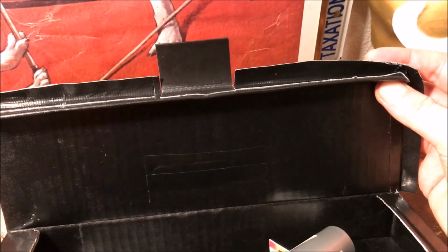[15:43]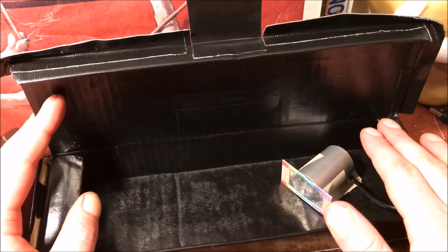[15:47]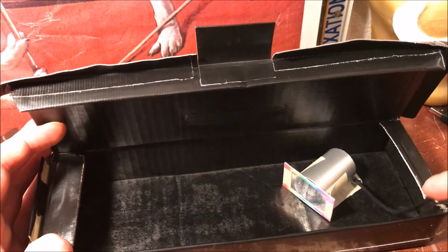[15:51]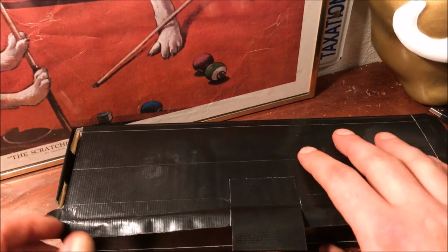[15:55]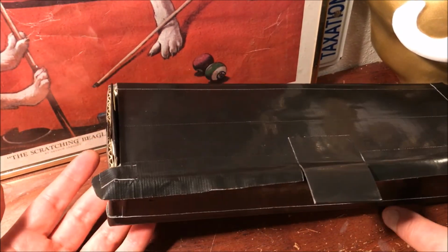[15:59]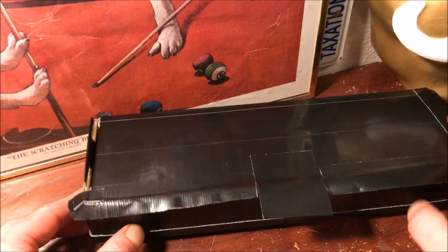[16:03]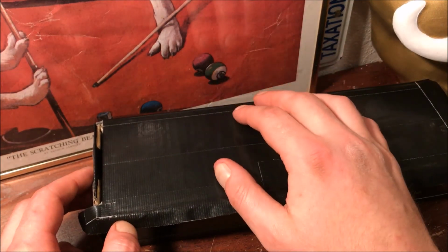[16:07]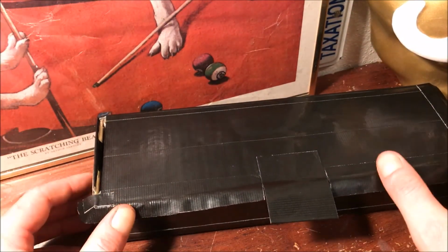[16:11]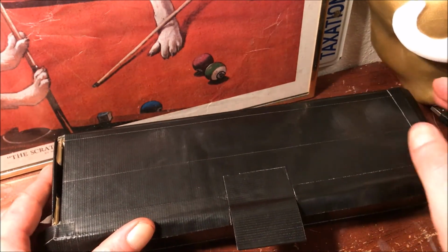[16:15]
All right guys, there you go. I'm really excited about this build. Something so simple, took me the better part of a day to build it, but it seems to be working accurately, and that's just great. Many more things that I can fine tune, lots of stray light reflections that we can get rid of, improve the material inside. So we definitely can improve on that, fix the camera and permanently figure out what exact position is going to work best for us, and really start using it to its full potential. What we're doing right now is just observing the spectra of different lights, but we can actually use the light in combination with the spectrometer to analyze different materials. And that's really what spectrometry is all about, probing into the chemistry of materials using light.
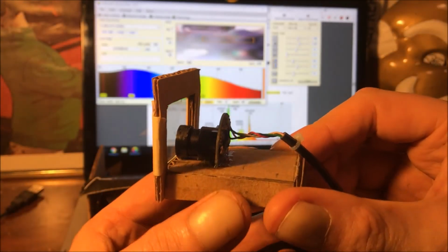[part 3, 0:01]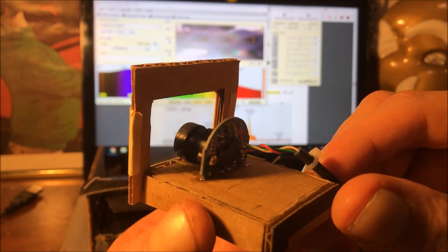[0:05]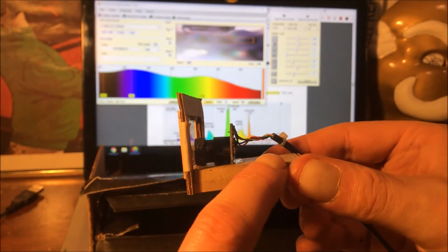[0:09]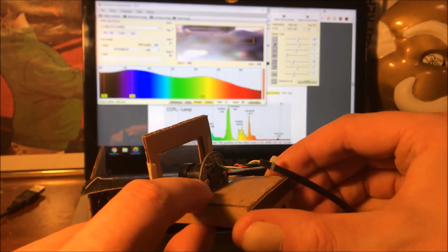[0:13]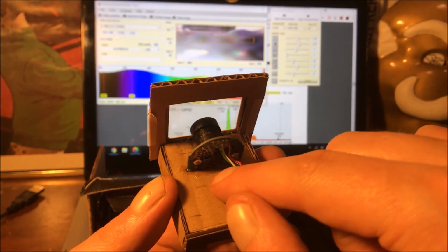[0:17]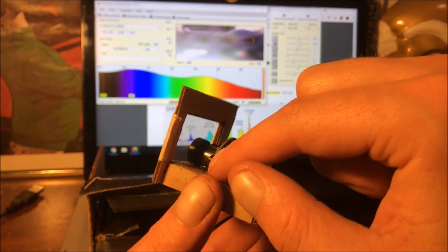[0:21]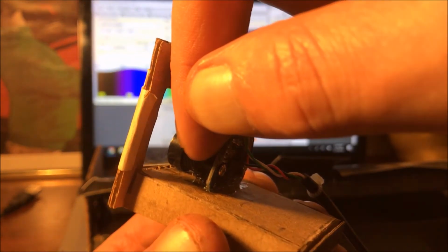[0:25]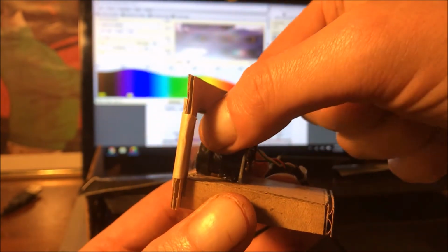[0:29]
So I made this little sled, I guess you could call it, for the camera. Basically, I just took some layers of cardboard and stacked them up to build up the thickness of this platform here. Then I cut a groove where the bottom of the board sits in, and I glued that in. And then I glued in this back half of the camera so that the
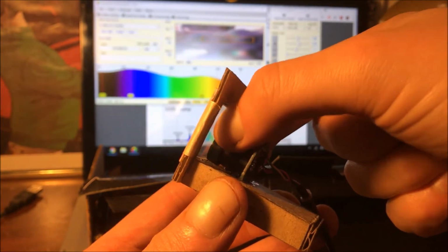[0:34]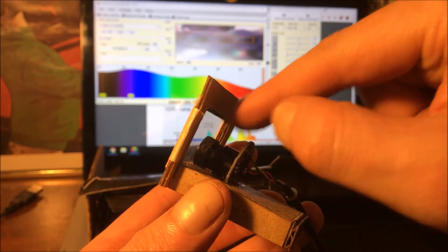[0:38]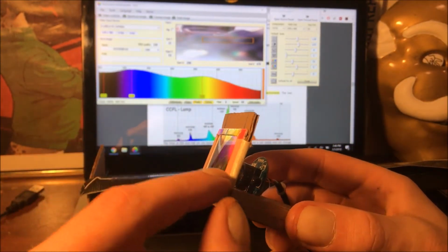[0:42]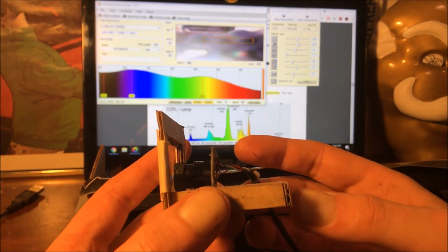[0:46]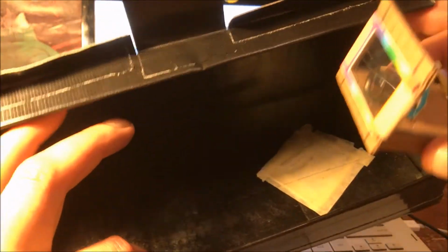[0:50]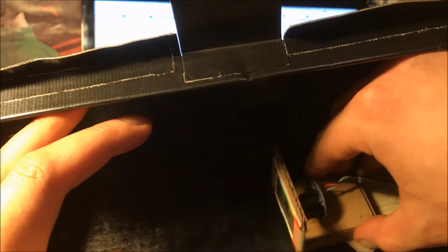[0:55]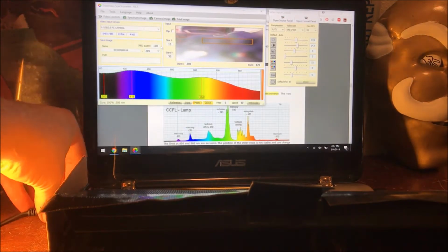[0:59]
focus can still be rotated here at the front. And then I just attached another piece of cardboard here to which I just taped on the diffraction grating. So now I can put it into the box and easily adjust it and play around with the variables. Alright, so I'm just going to go ahead and plug in the webcam.
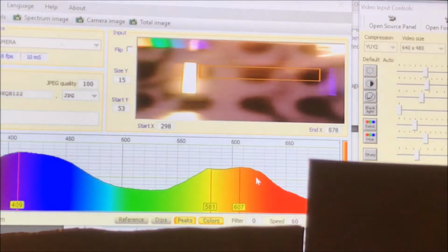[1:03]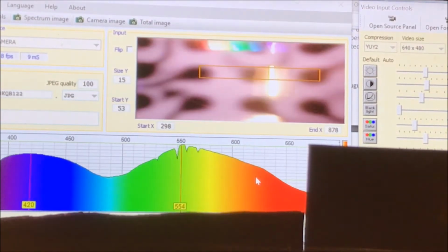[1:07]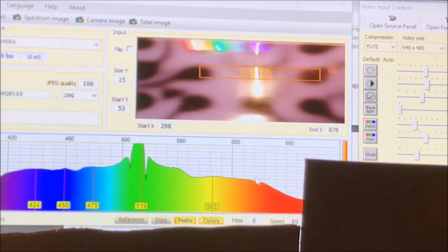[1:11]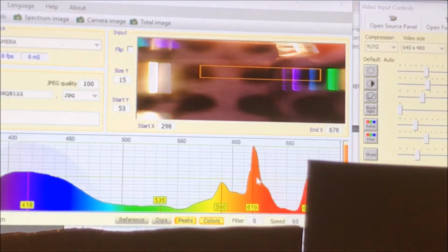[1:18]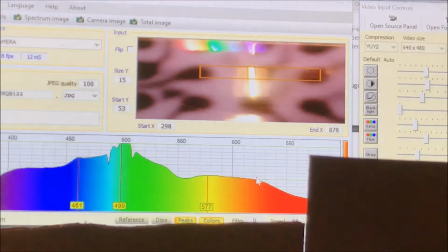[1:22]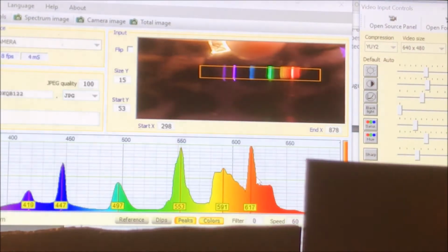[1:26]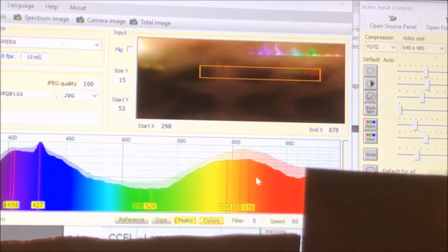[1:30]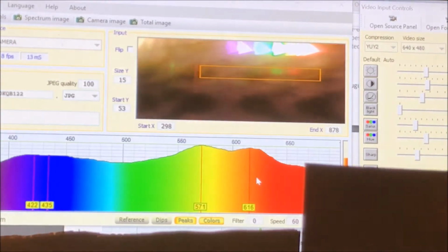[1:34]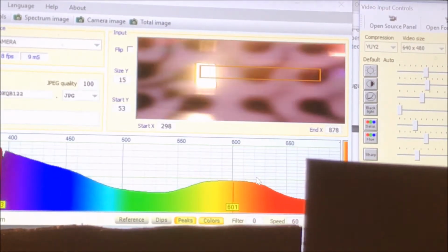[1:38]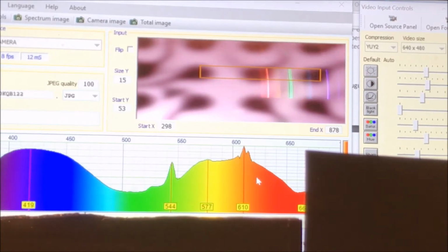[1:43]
Alright, so that's pretty cool. So here's the transmission. So if we're looking directly at the slit, I'm not sure what those spots are. Some weird interference pattern. Anyway, then if we look at either side, we can see our diffraction, and then if we keep going, I don't know if you can see that, but there's that light green and red, and that's probably the secondary diffraction there. And then there's the one on the other side. When we put it back to center, it looks pretty good.
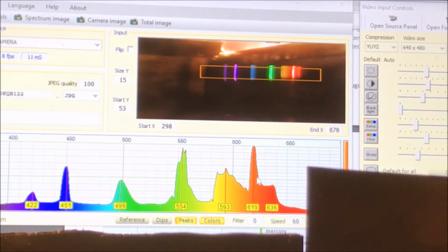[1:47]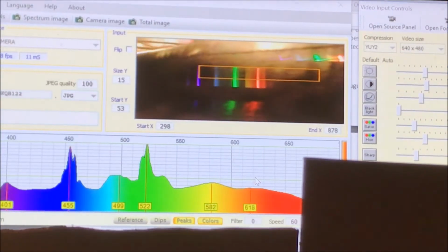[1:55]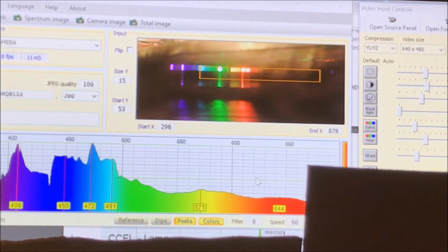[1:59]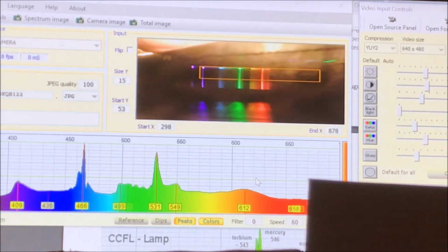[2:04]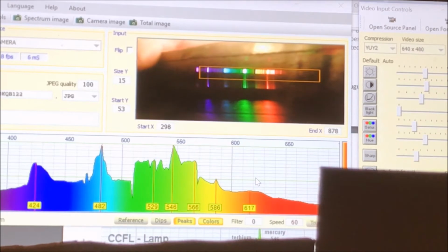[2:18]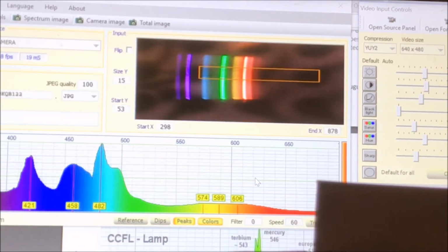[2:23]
And so I'm going to go ahead and put it towards the back of the box here. The distance from the camera to the slit does make a bit of a difference. The separation between the lines becomes greater the further you get away from the slit, and that can give you better sensitivity, better resolution. So you can see I'm kind of towards the end of the box here. If I move it towards the slits, everything comes closer together, but the lines also get larger. You can also see that kind of curvature that we get there when we're pretty close. So right now I'm about 3 to 4 inches from the slit.
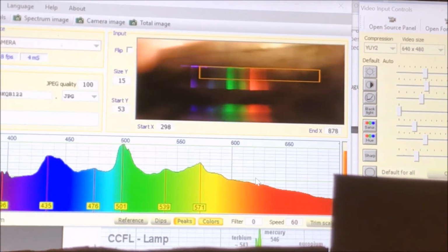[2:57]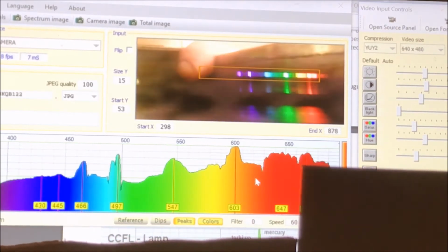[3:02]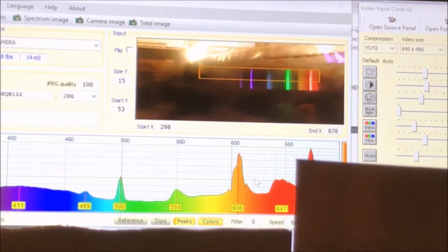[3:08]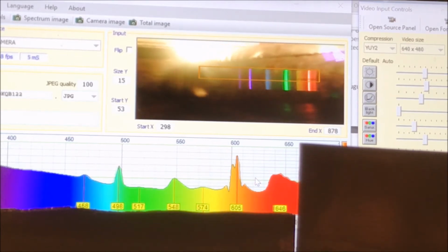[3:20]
And some of that could be because of the optics of the webcam itself. But anyway, we can move it back. And because we now have the ability to focus while seeing the image, if we find a good spot here where it's not too bright, you can start focusing in. So you can see there it's getting more blurry. If I go in the other direction, it gets sharp and then blurry again.
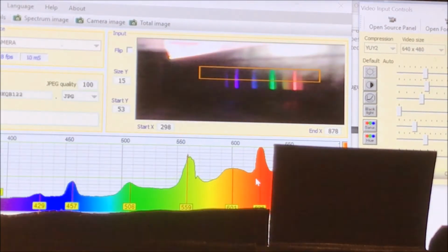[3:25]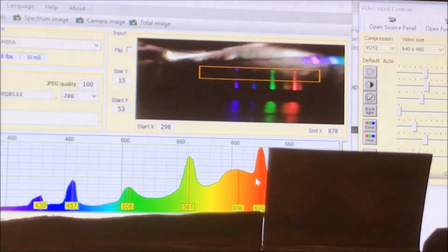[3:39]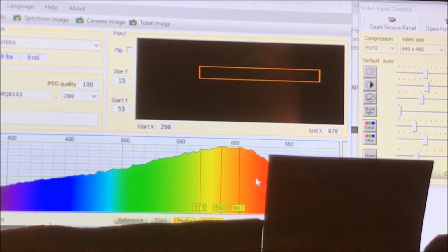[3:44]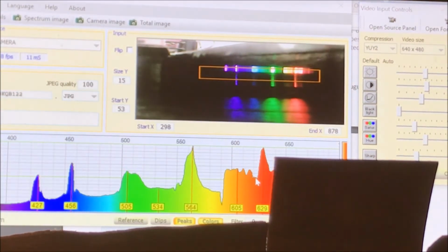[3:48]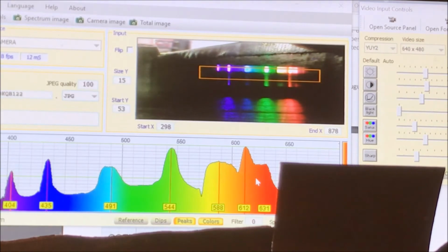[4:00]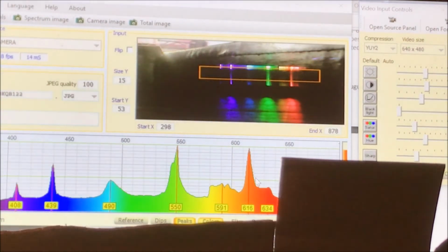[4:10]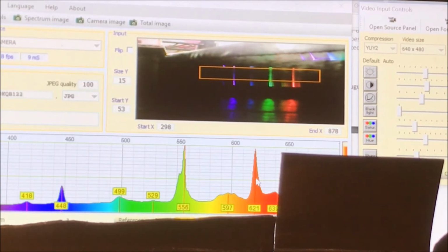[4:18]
And actually what I'm going to do is use the peaks in the graph to help me find the best focal point, and that will be where I get the best resolution. So you'll see that peak in the green there start to get sharper, I think. Let's see. Yeah, so you see all those new peaks coming out, and same for that terbium and mercury area in the yellow to orange region. And then if I keep going further, they start to get more broad and smoothed out as we lose detail there. So I don't even need to rely on the camera image. I can just use the data to find the best point, which seems to be somewhere around here.
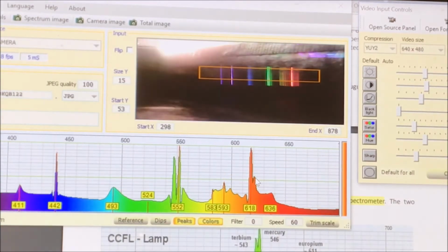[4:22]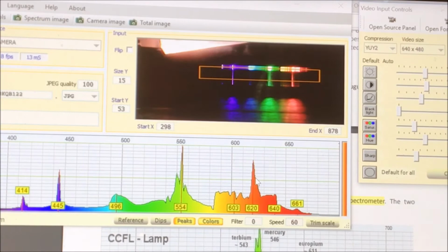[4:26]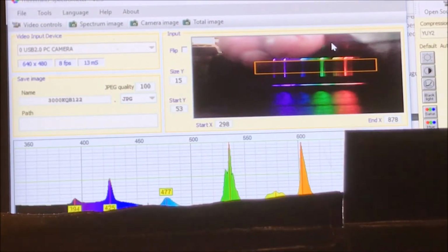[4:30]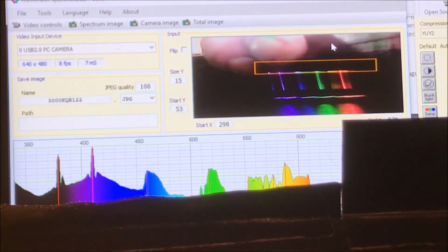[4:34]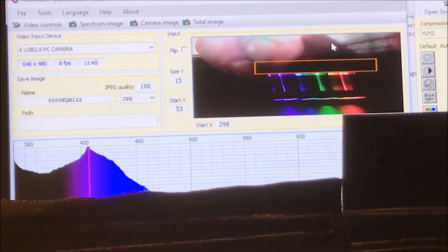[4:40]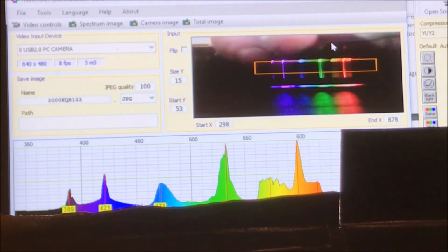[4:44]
Now I'm going to go ahead and close it down to get rid of most of the stray light. And I'm just rotating the entire camera unit, and you can see how it goes askew, similar to the way that tilting the slit affects it. So I guess in a way you could correct one of those with the other.
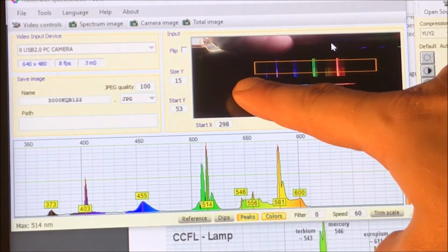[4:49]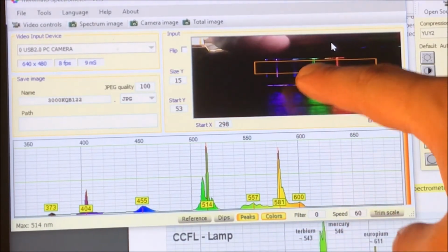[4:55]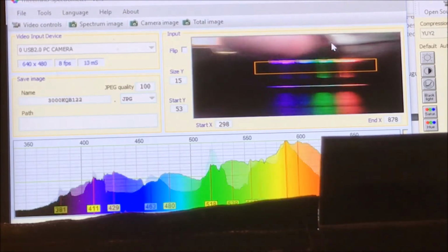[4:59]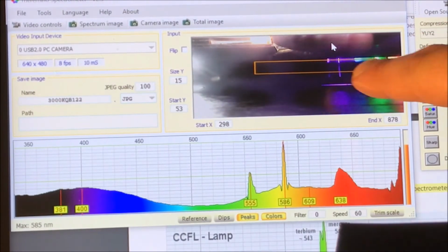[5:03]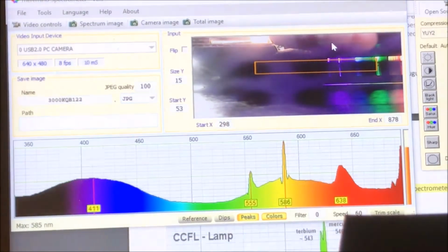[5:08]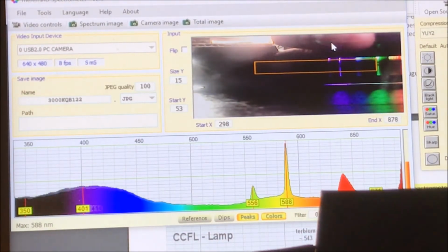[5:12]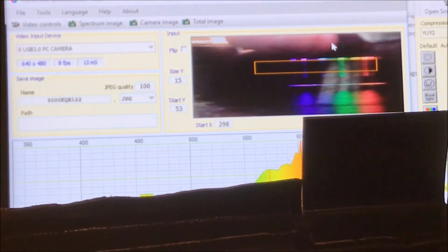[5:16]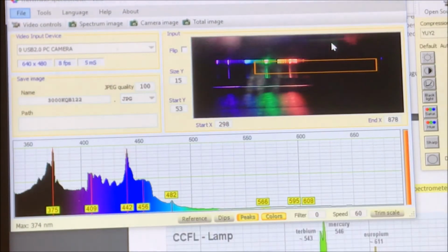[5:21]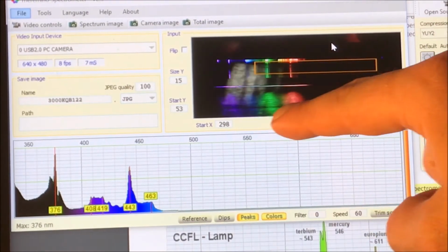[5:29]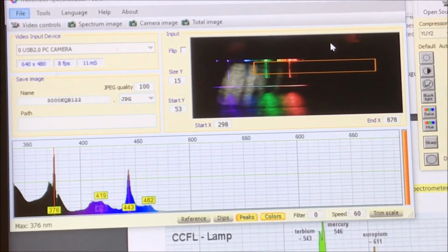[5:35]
Now, generally you want to center your spectrum, as far as the lines in the image go, in the middle of it. If you have it so it looks like this, where maybe some of it, the red, is being cut off, it's too far to the right. That means you've gone to too shallow of an angle relative to the center line in the spectrometer. And so you're cutting off the red and the IR. And then if you go in the opposite direction, maybe closer to 45 degrees, then you're cutting off some of the UV. But on the other hand, you have this large area extending into the IR. So if you had a detector that could pick that up, you could possibly use that to your advantage.
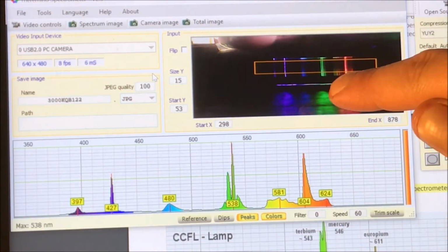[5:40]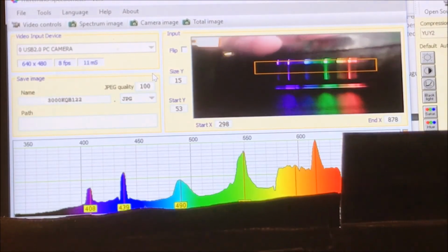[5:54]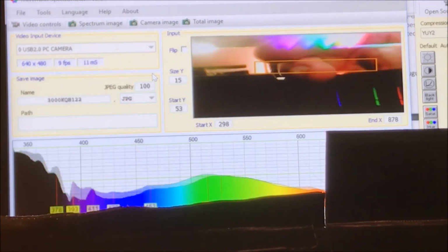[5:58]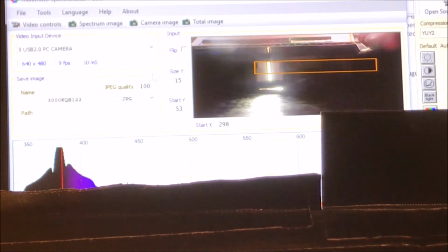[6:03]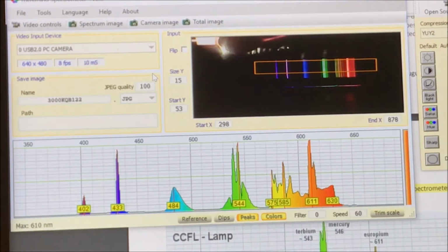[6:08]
If the lines on your spectral image are too close to the bottom or too close to the top, that means your relative position of the camera in respect to the slits is off. So if they're all the way at the bottom, that means that your camera is too high. So I can kind of simulate that for you guys here. It would look like that. And I obviously can't do it too low. So just make sure you get the position such that the camera is ideally in the middle of the slits.
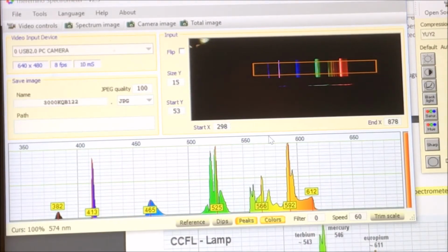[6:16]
Alright guys, there you go. I'm really happy with that. You can see that 577, 578, 579, whatever that other peak is. You can clearly see those two resolved. So we're getting great sensitivity out of something that took, you know, half of a day to build. I think that's amazing. Really happy with how this turned out.
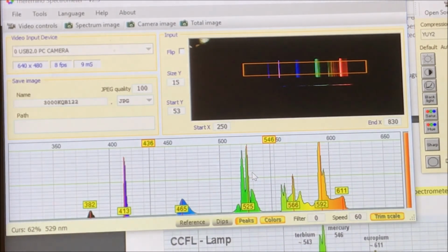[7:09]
The one thing that is missing here to make it a truly quantitative spectroscopic measurement is that the quantity of light, so the counts or the counts per second, aren't really being addressed. Like I was saying before, the limitations of the optics of the webcam, which seems to record a more round image, results in distortions of intensity. So the peak positions are spot on. You can see we went off of calibration here, so we can move that back. So the peak positions are exactly where you expect them to be once it's calibrated, but the relative intensity isn't quite correct. So I know that this red peak is normally pretty high, and then the green ones are next, and this 436 one is really low. And I think what's happening is that the outer edges of the detector are being exaggerated.
And theoretically, you could compensate for this if you had a known standard curve. So you took the same exact lamp and measured it in a laboratory grade setup or something like that, or got that data from somewhere. For example, I've measured this exact lamp on an Ocean Optics setup, so I can compare it to that and make adjustments per wavelength so that the graph is more representative of the reality.
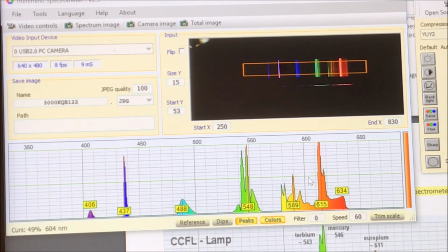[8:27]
If you were to do that, then you could go even further and instead use a white LED, so you have a really broad spectrum and you don't have any of these patches of no intensity, and then you can make a really nice wavelength dependent adjustment, and maybe build it into the algorithm of a software like this. I think they have a developer version of the Spectrometer software, where it could automatically adjust for the wavelength dependence.
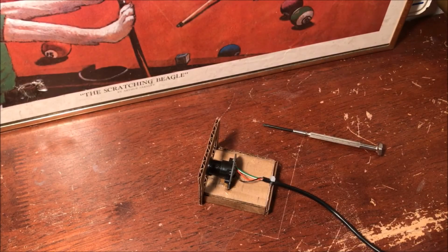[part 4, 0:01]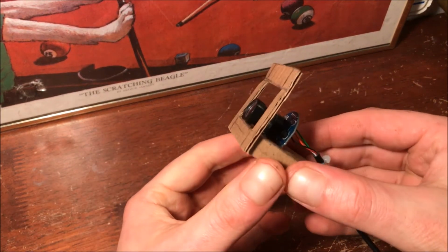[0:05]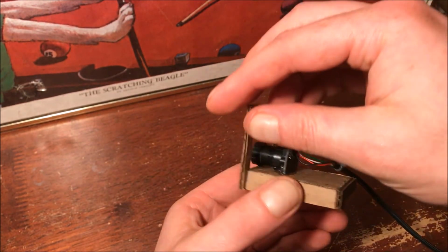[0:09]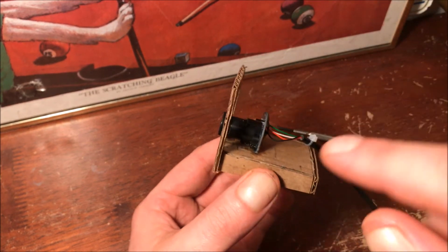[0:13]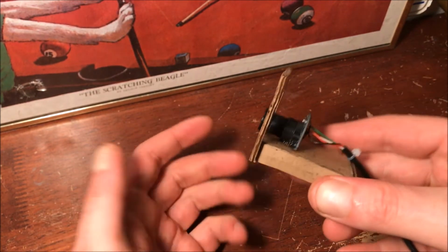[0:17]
Hey guys, back to doing another episode on the DIY spectrometer. So previously I've been running this just in the visible range, and as I mentioned, there is an IR filter in these webcams, just like most cameras, to block out ambient IR.
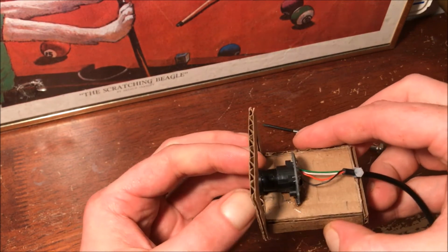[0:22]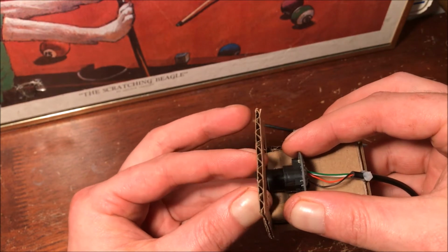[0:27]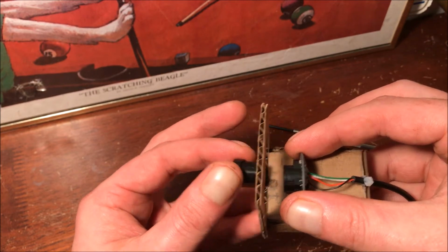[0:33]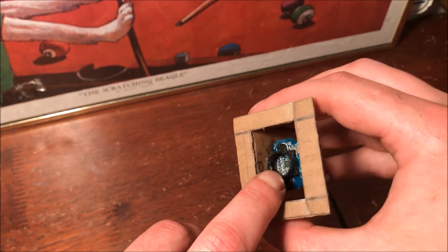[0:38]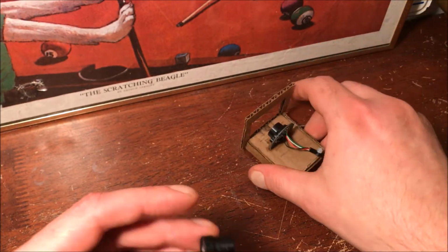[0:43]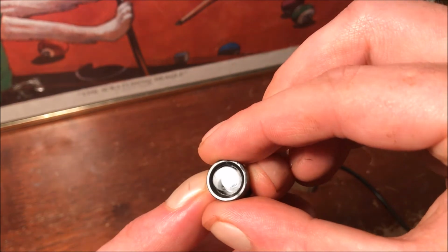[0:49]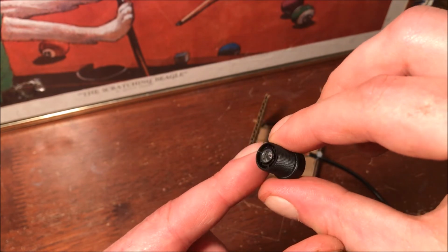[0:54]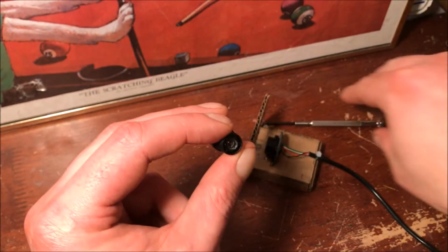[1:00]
And if we take out the lens on this one, and it's really going to vary on which webcam you have, they're all very similar but have slight differences. So when you take this out, you really want to be careful that nothing lands on the image sensor. Keep that really clean, and same with these lenses. I'm pretty sure these are plastic, so you could probably clean them with ethanol or IPA, but definitely not with acetone as far as solvents go.
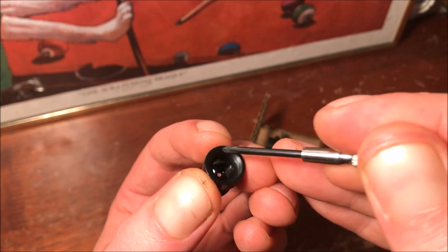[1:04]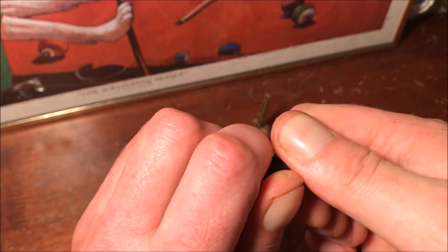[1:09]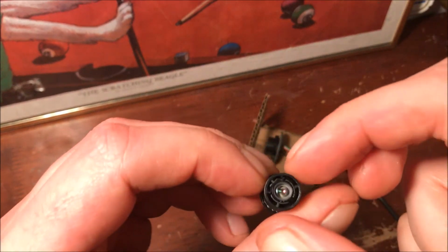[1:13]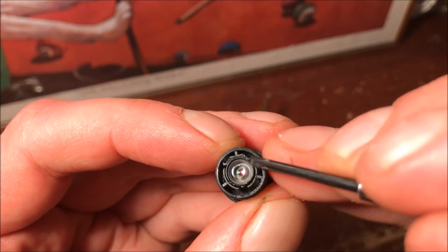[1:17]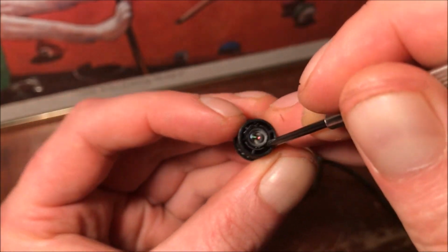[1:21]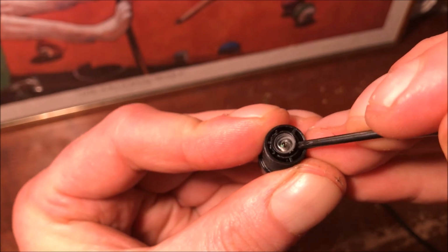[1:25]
And this one you can see has this built-in big lens. Some of them you can unscrew this front part, but this one you definitely can't. And it has a lens in the back here, and by the looks of it, I think I should be able to lift this out by this point here. So let's give that a shot and see what it looks like on the inside. Okay, yeah, there it goes. So be careful with these parts.
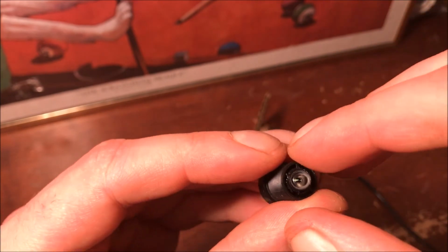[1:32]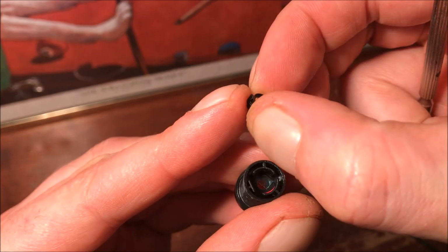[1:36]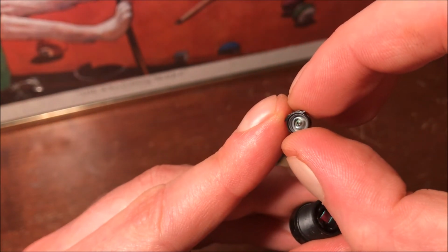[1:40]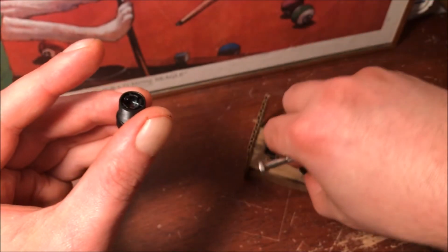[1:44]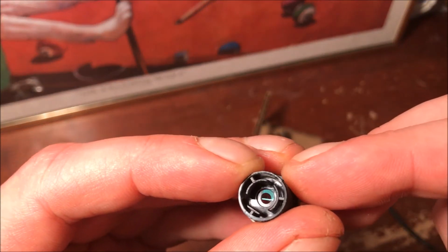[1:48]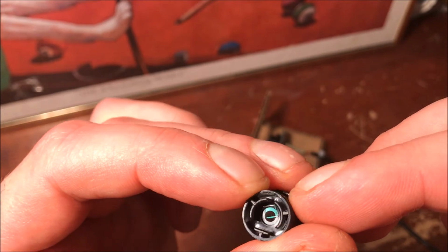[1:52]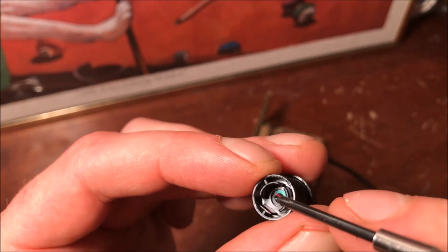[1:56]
You know, this one's actually pretty nice. It's got this chunky plastic enclosed lens array for the top there. And, oh, what do you know? I guess they didn't even glue it on too well, because that's already slipped off, because that's definitely our piece of glass. That's the IR filter.
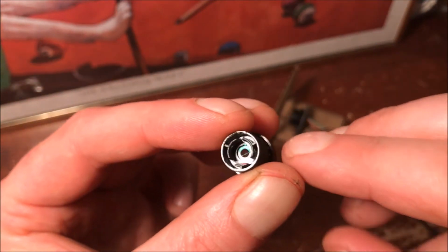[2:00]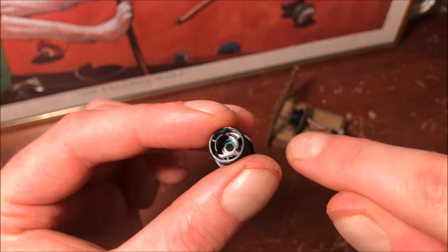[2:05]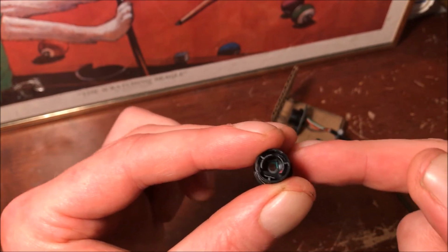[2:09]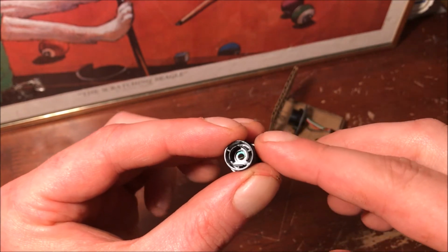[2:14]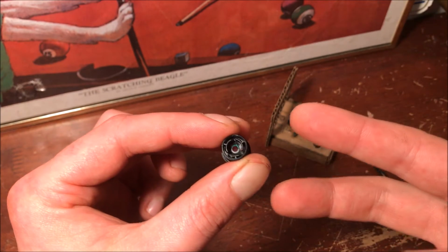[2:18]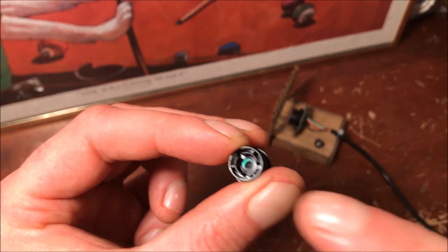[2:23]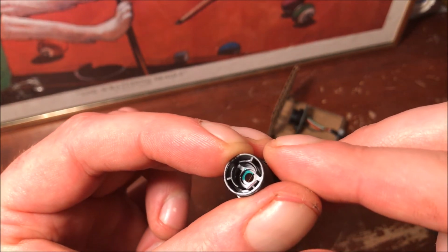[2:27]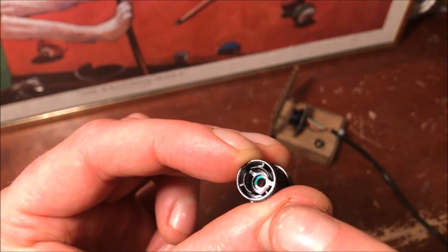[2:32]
And by the way, the way that filters are called in optics and in photography, it's complete opposite. So in optics, an IR filter is something that filters out, so blocks IR light. But in photography, an IR filter is something that lets in IR light and blocks everything else. So this one blocks IR light, and you can see that kind of bluish hue to it when we look at it from the front side there.
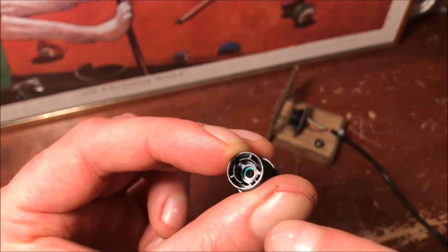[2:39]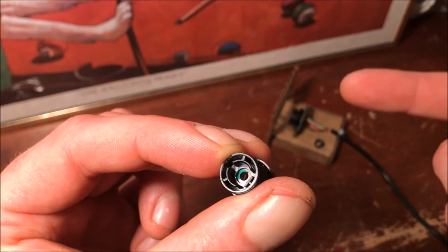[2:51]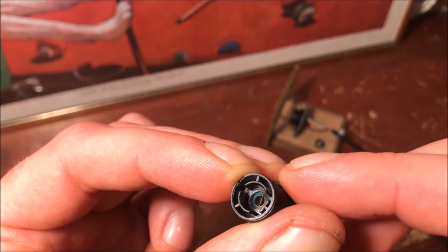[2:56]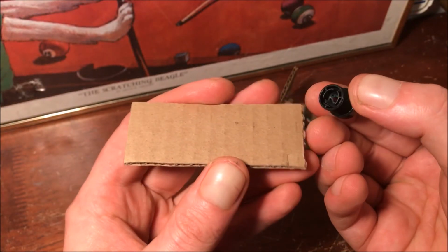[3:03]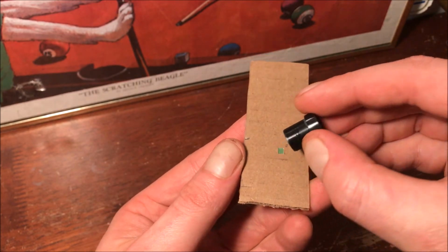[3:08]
And that's because, as you've seen probably in the previous spectra that we've measured, this is also grabbing some of that far red, or even around 700 nanometers. So if it's absorbing a little bit of the red visible spectrum to the human eye, it's going to appear a little bit blue. I'm guessing some of these are ultra thin films of gold. I'm not entirely sure what this material is. Okay, so I definitely want to save that though. That's a useful optical piece to have for the future.
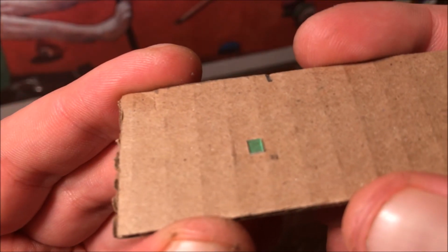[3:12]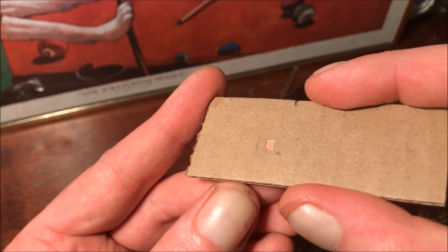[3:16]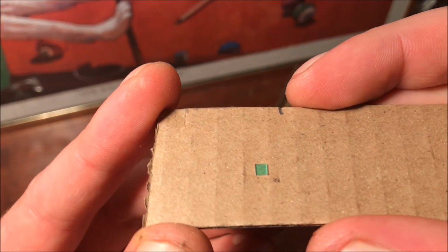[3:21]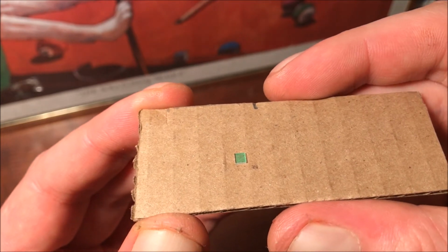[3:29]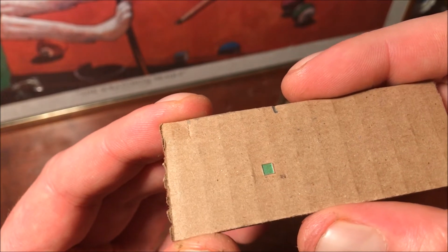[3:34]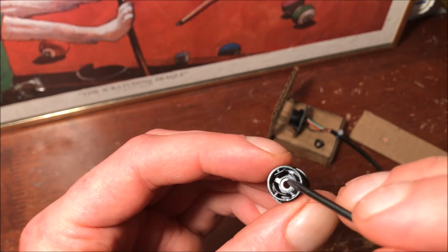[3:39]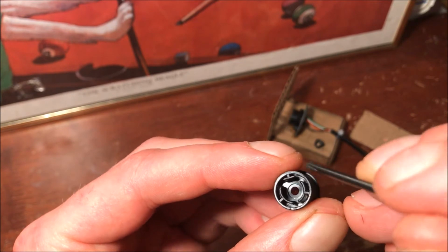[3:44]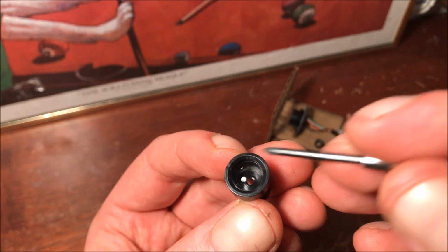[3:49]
So I'm going to save that, and eventually I'd like to check the absorption of it. And I would guess it's a wide bandpass type of filter that's blocking from, I don't know, 650 to 900. In some of the other arrays, the filter might be just glued on to the corners. Again, you can use a solvent to remove that, or just try to wedge it off. If you don't need it, you can break it, as long as it doesn't affect the other optics.
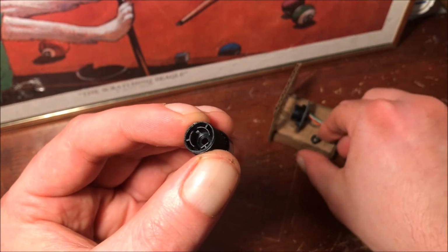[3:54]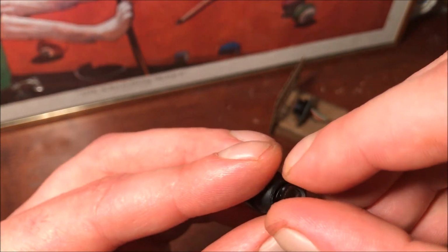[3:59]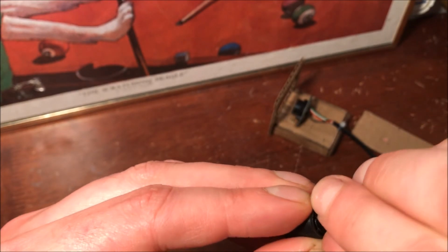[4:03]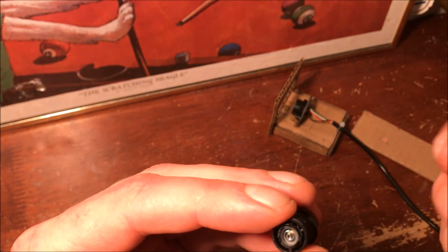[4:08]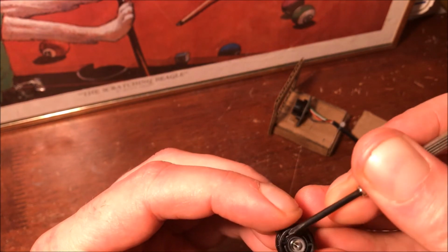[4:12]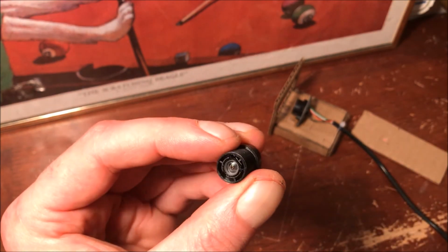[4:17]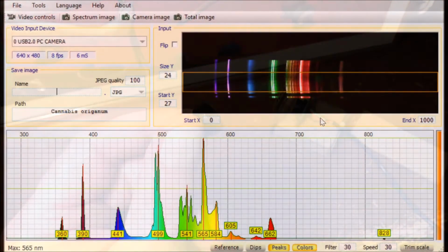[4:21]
So I'm going to go ahead and put back our top lens here, and this one is actually really convenient, I think, the way they've designed it. So it just has these slots to fit in, and I'm just trying not to touch the lens, but get it in there evenly. So now we have a UV-Vis IR spectrometer. All right, so we got a nice line spectrum there for this compact fluorescent.
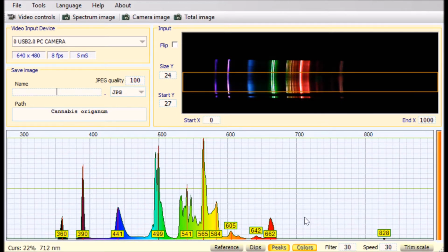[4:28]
And all we have to do now is calibrate it relative to intensity position. So if we go to trim scale, we can see the two calibration points. We need to move those way over here so that they align with the green peak and the blue peak. Like that. Okay, so now we can unclick trim scale so we don't mess up that calibration, and we can turn off the peaks. And what I want to do now is a little absorption measurement.
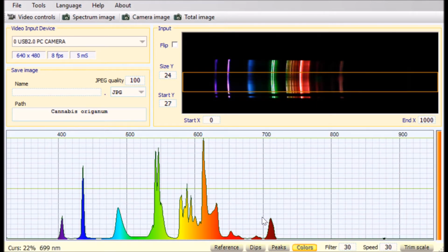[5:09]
So a little while back on the Grokowski channel, somebody had mentioned to him to use a piece of a Mountain Dew bottle as a filter for blue, red, or blurple LED lights. So if we think about how that could possibly work, there's many origins of colors to material, but a transparent material with a light green appearance, chances are that it's absorbing blue and red photons more significantly than it is green photons, and so it's reflecting some green and then transmitting the rest. So if we want to do a little absorption measurement, we can use this reference function in Theremino.
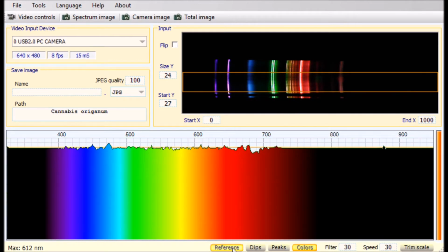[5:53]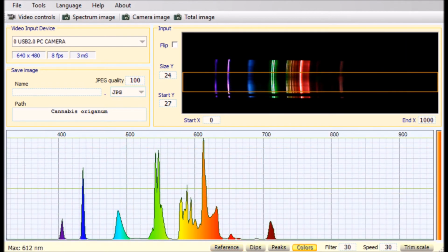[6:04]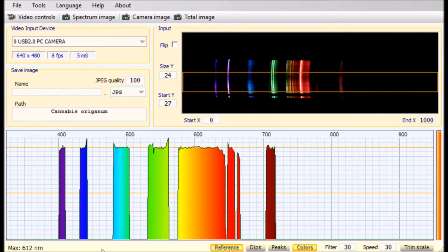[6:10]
And what you can see here is that it's taking the intensity of the light that it's reading and setting that basically to 100. And of course the CFL is not a good light source for that because it has all of these gaps in the spectrum, and so you wouldn't get a very continuous absorption spectrum out of that.
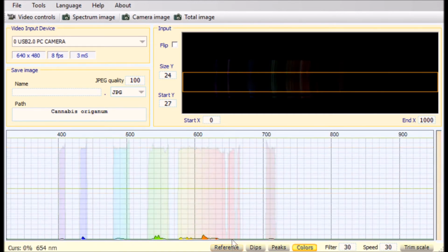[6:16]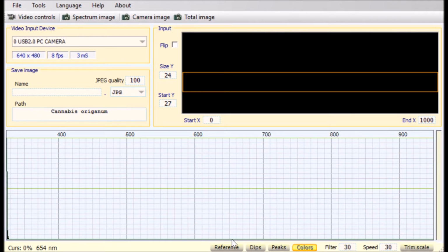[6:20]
So what we can do instead is go ahead and switch out the lights here for a halogen. So this is just a standard household light bulb that has a very similar spectrum to an incandescent light. They're pretty much the same. So I'm just going to go ahead and take out the CFL and put in the halogen bulb.
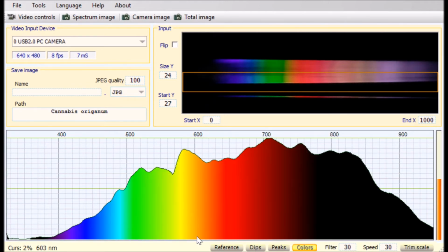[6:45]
And let's just adjust our spectrometer so that we're capturing this really intense band here. The more light we have for an absorption measurement, the better. So I'm gonna move my window up to capture that. All right, so yeah, you can see we have large intensity all the way from 400 to about 1,000 nanometers using this light source, having taken out the IR filter.
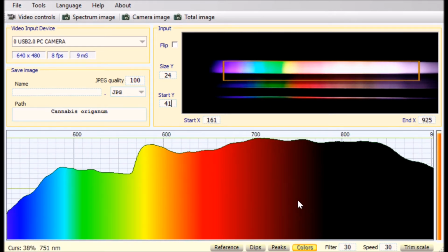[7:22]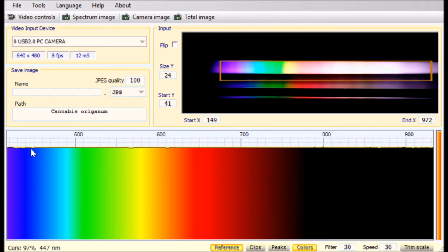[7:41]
So let's first trim up our window so we're not seeing any light that we don't want to. Otherwise, it'll come out as noise. So like that, looks good. We got most of the visible spectrum here. And then we can switch to reference. And yeah, there you go. We got a nice smooth line throughout our measurement area.
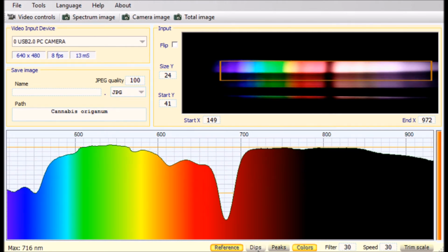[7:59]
Okay, so now what I'm going to do is just put a piece of this Mountain Dew plastic in front of the entrance slit of the spectrometer. So here we go. All right, and there you go. Let's turn on the dips, which will basically label the minima in the spectrum now. And the peaks in an absorption spectrum are basically upside down. So here's a peak here at 451. There's a good one at 615 and a very large one at 682, where light is being absorbed by the material and not being transmitted through.
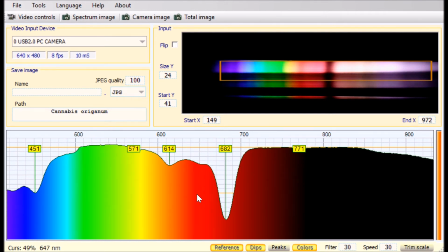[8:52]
Whereas right at 550, right in the bulk of the green, you can see all of that light is coming through along with IR light as well. So it seems like it's filtering out red a bit more preferentially than blue, but they're pretty close. And then you got this orange peak as well. So yeah, as far as using a piece of this material to filter out full spectrum or blurple LED lights and try to normalize the way that the plants look under that, that could make sense. Of course, the possibility here now is that you're going to take away a lot of the red and some of the blue, and the resulting image will probably look a bit greener than you expect.
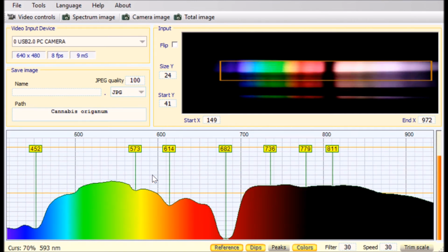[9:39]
Alright, just for fun, let's go ahead and put another layer of this Mountain Dew plastic material on there. And as with any transparent material, we would expect that the intensity in the regions that are being filtered out would drop, and the intensities in the green, for example, should still stay high. So here we go with that. All right, and there you go. We got pretty much 682 completely removed, and the blue intensities seem to be almost gone as well. And again, we have a peak at around 420 and one around 450 for that. Right around the intensities you would expect that LEDs actually produce that are used to then pump the phosphors to get the higher wavelength light as well. So yeah, it would be quite efficient to filter out that blue band you get from LEDs.
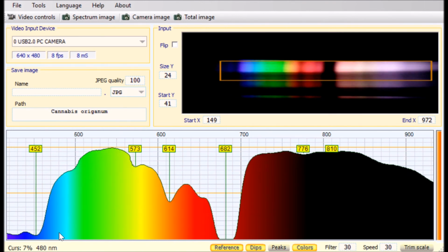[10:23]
Alright, so let's go ahead and go for a third layer here. And there you go, still plenty of green. We've seen a small peak that wasn't as obvious before, right around 500, 573, and the 614, 615 ones become more obvious. And then there's a shoulder to this red one around 650 as well. And you can also see that reflected in the line spectrum here. We got an obvious gap in the red and in the blue.
All right, guys, so there you go. So the spectrometer's working great. And again, like I've mentioned before, we're just kind of scratching the surface of what's really possible with this tool. We can measure absorptions of liquids and make suspensions of various compounds in those liquids, and measure absorption of organic compounds and do all sorts of stuff.